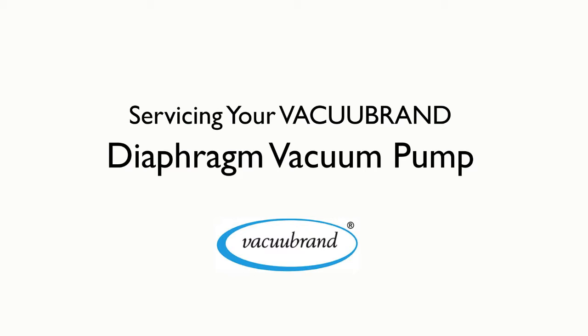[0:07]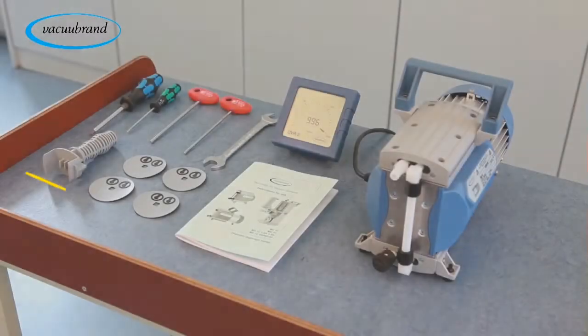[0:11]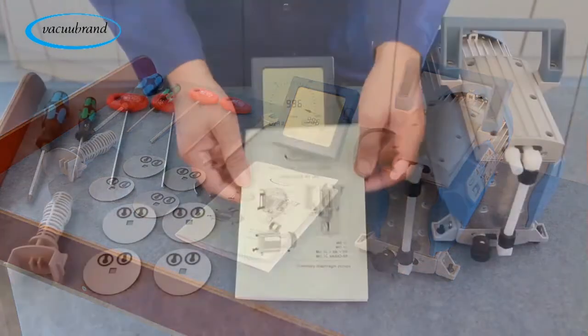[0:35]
To begin the service on your Vacuubrand diaphragm vacuum pump, you will need the following tools and accessories: a diaphragm service kit, a Phillips head screwdriver, a flat head screwdriver, a 4mm Allen wrench, a 17mm open-ended wrench, a vacuum gauge with hose barb connection, an 8mm ID vacuum tubing, and a service manual for reference. You will also need an alcohol cleaning solution and a clean towel for head cover cleaning.
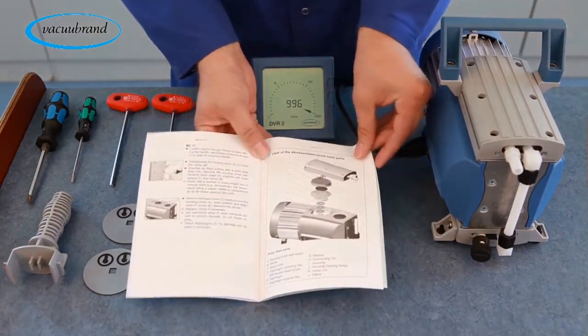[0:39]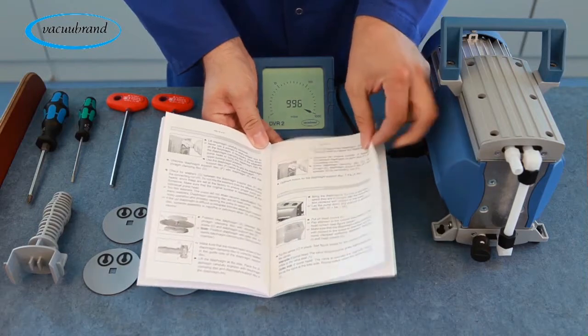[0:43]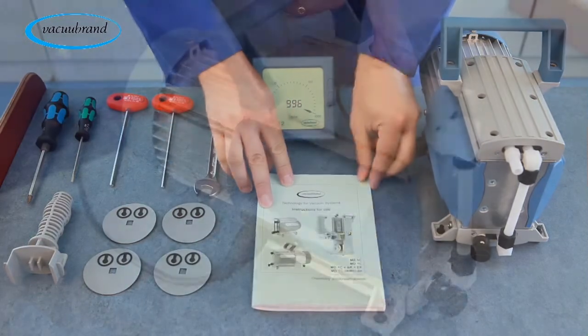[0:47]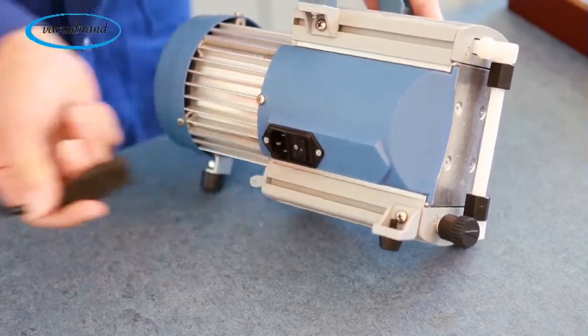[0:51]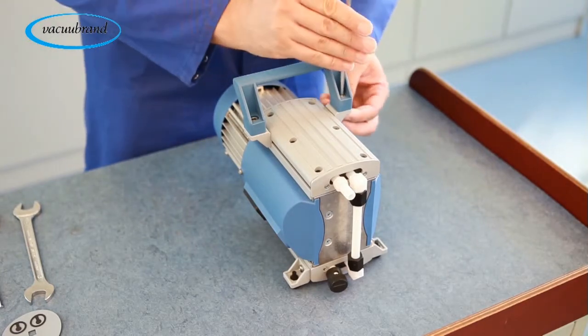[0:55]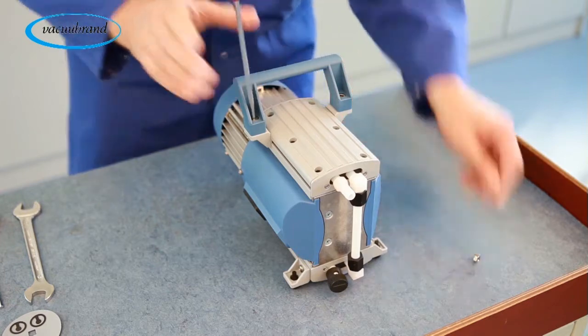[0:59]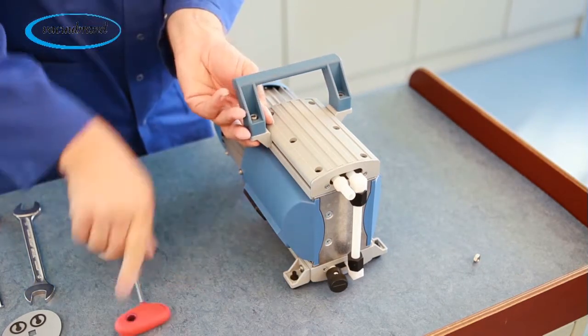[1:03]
Read the instructions in your service manual carefully to understand the details of servicing your vacuum pump. Turn off the power to your vacuum pump and disconnect the power cord. Remove the handle using the 4mm Allen wrench and set the screws and nuts aside for reassembly later.
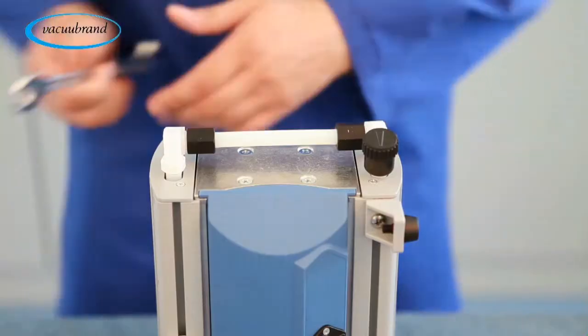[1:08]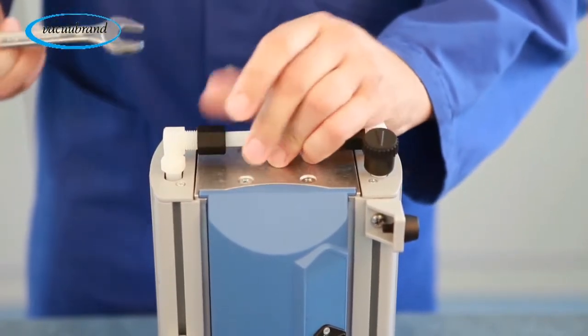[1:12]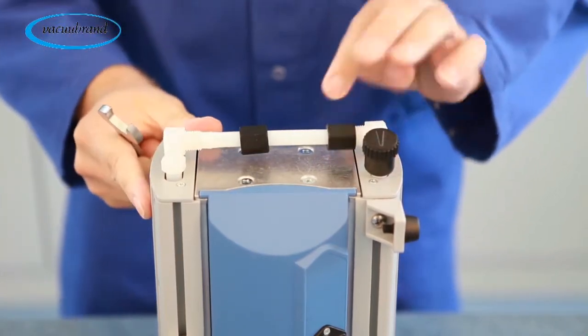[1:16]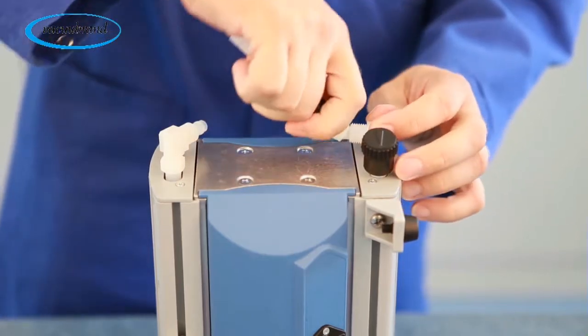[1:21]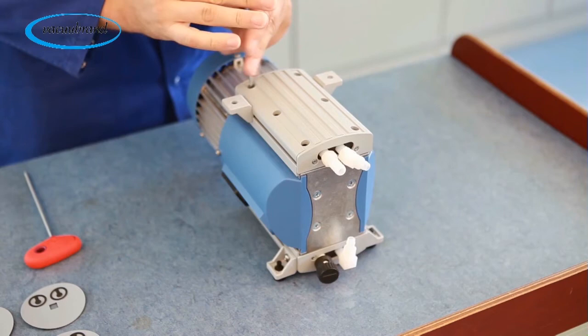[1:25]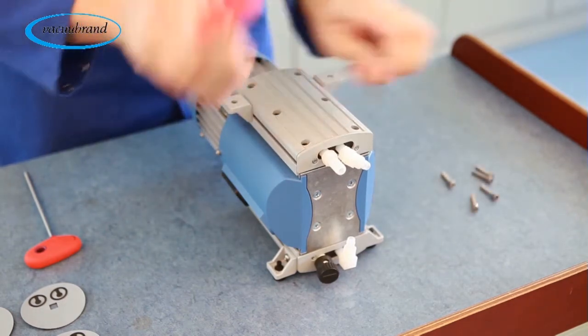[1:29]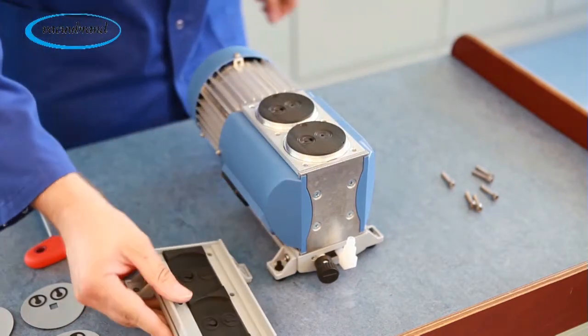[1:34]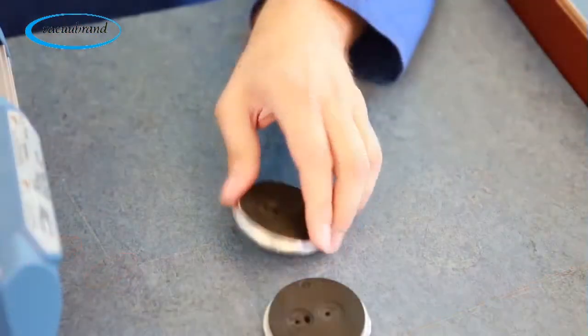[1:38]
Using the open-ended wrench, refer to your service manual for proper size. Disconnect the vacuum piping connection by loosening the vacuum fittings, carefully removing the piping from the elbow connections. Using the 4mm Allen wrench, remove the housing cover. Remove head covers and set aside.
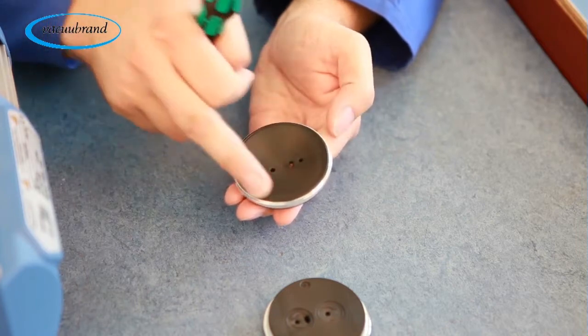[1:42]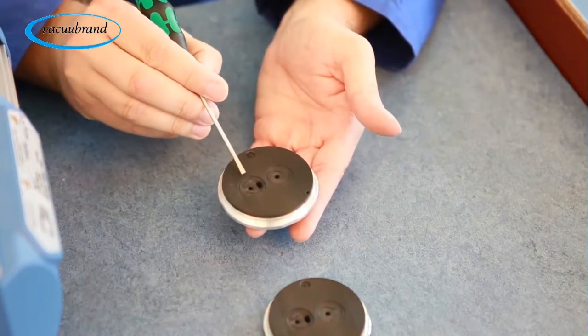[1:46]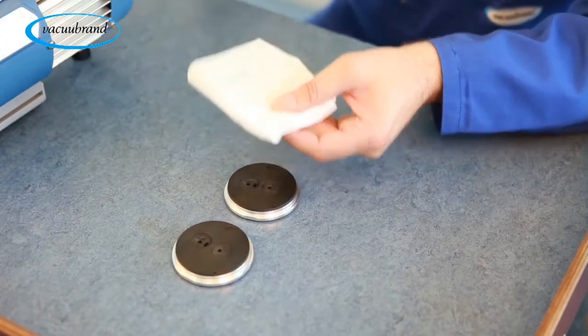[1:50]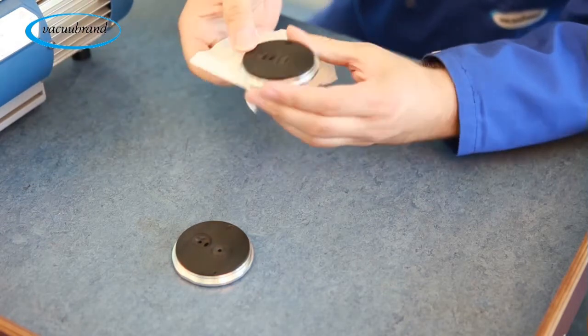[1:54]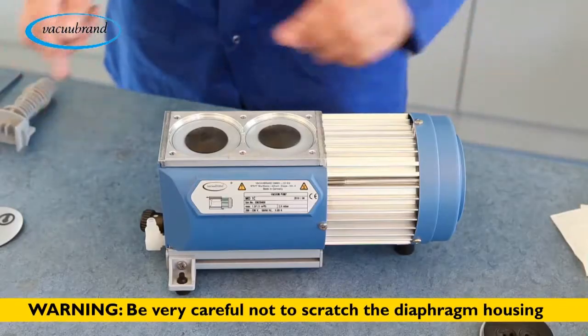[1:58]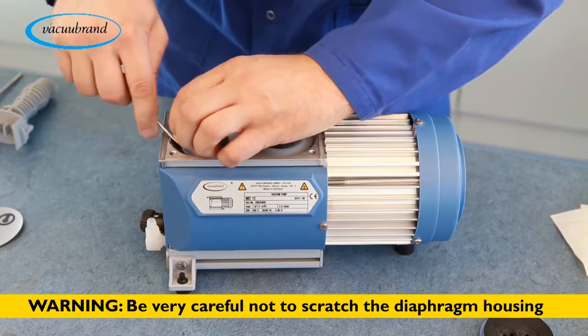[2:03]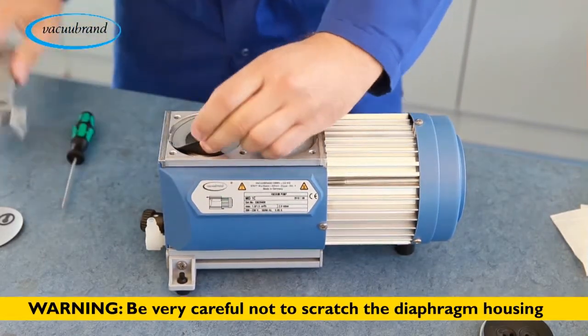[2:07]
Check for any noticeable wear and tear on the head covers and replace as needed. Clean intact head covers with ethyl or isopropyl alcohol. Carefully press the diaphragms to be changed using a blunt tool such as a flat head screwdriver to create a space to lift the diaphragm so that the diaphragm wrench can slip in. Be careful not to scratch the diaphragm housing.
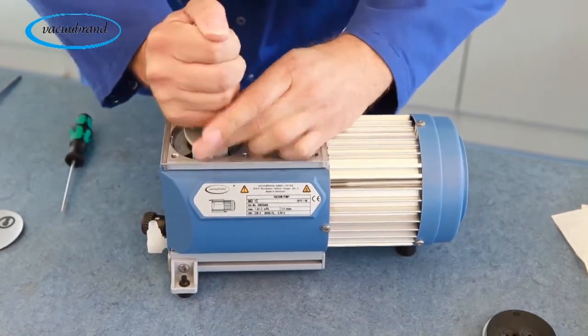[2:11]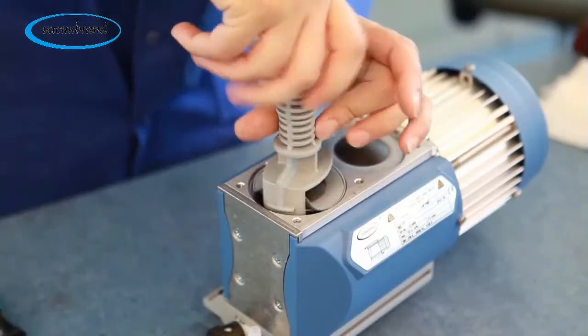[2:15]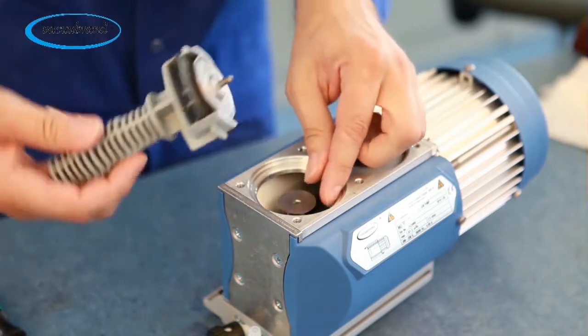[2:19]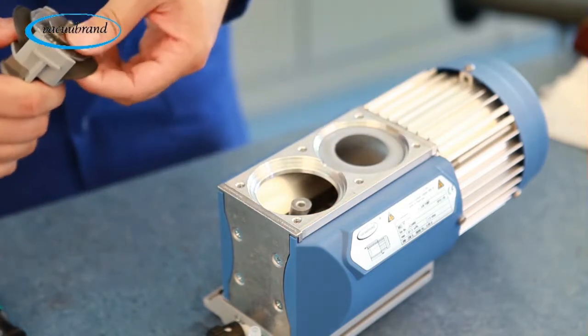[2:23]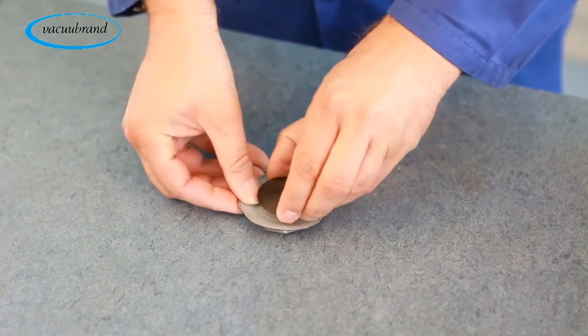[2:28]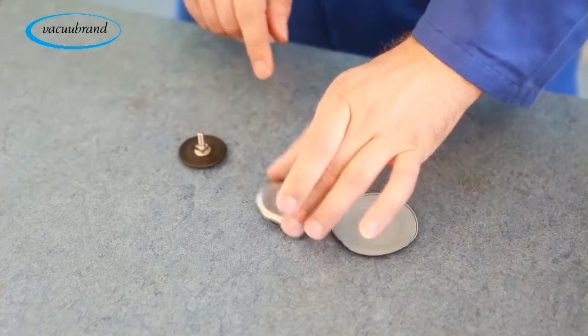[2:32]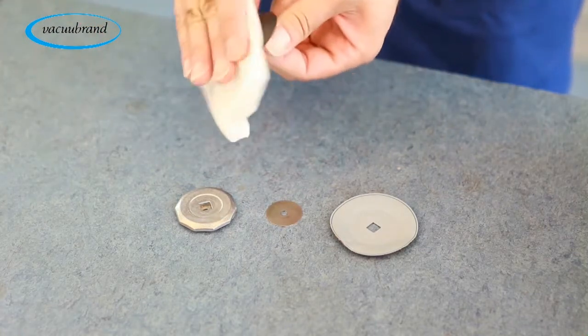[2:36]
Slip the diaphragm wrench behind the diaphragm and engage with the flat-sided support disc. Loosen the diaphragm support disc from the connecting rod of the pump itself by turning counterclockwise. Remove the support disc assembly washer from the connecting rod. Remove the diaphragm clamping disc from the diaphragm assembly and clean with the alcohol solution.
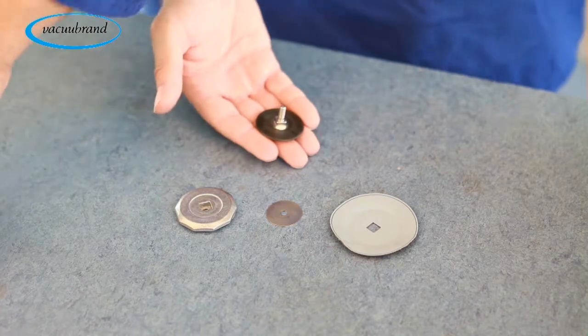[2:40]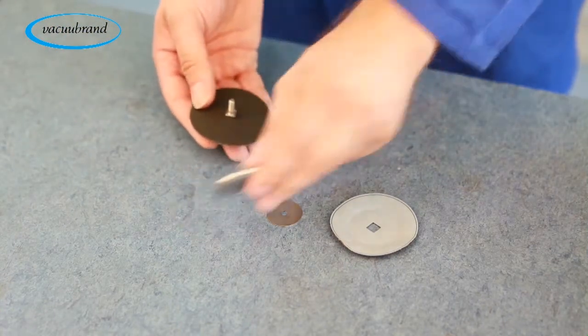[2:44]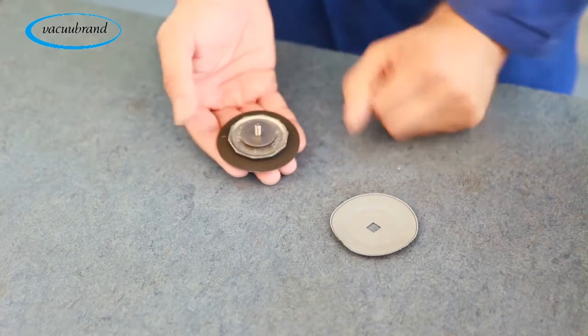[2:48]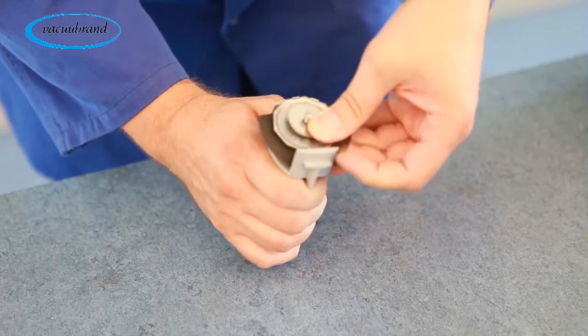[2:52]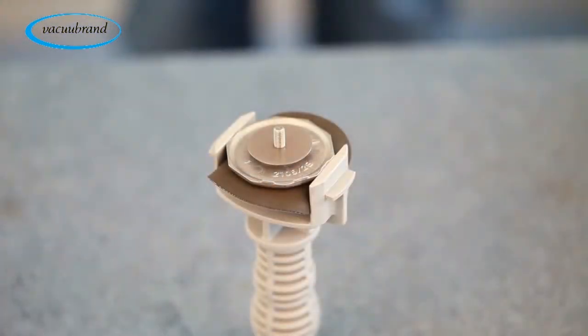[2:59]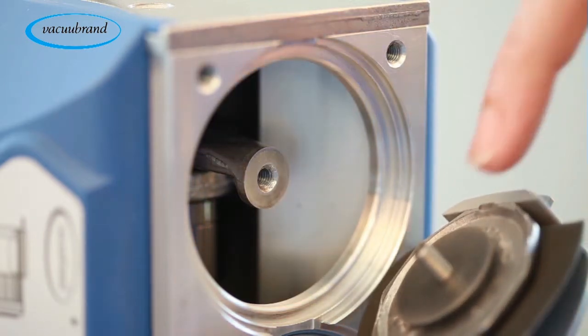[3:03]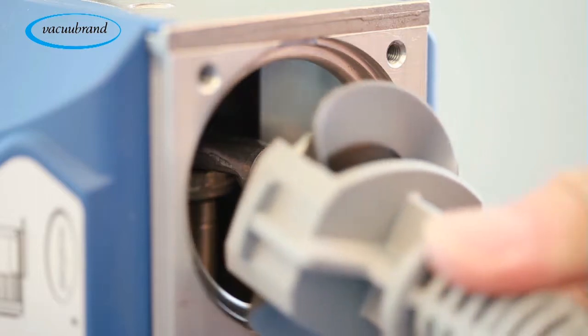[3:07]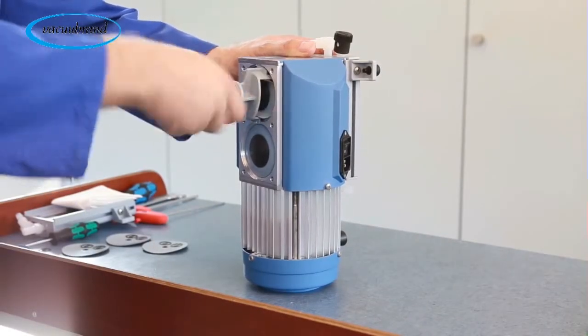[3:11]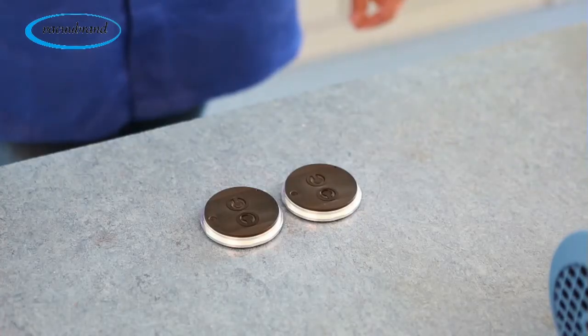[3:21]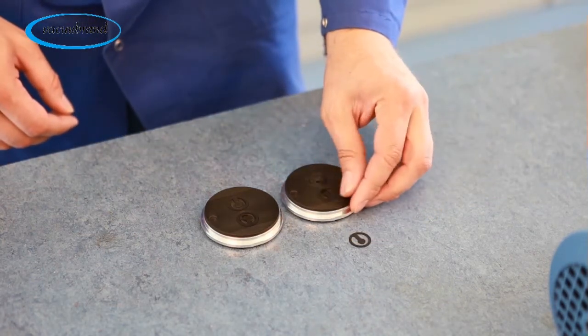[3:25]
Replace the worn diaphragm with a new diaphragm in the same orientation and reassemble to the diaphragm assembly. Place the assembly back into the diaphragm wrench. With the pump on end, guide the diaphragm assembly back into position on the connecting rod, replacing the support disc assembly washer in the process, and screw the entire assembly back into place. Remove the old flapper valves from the head covers.
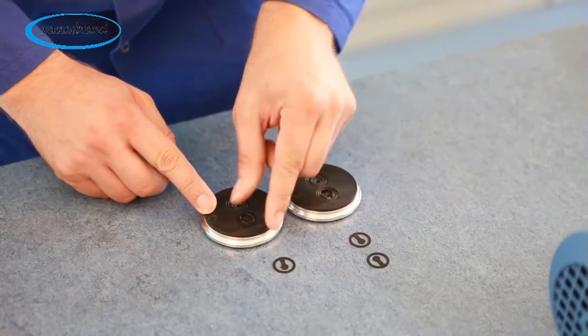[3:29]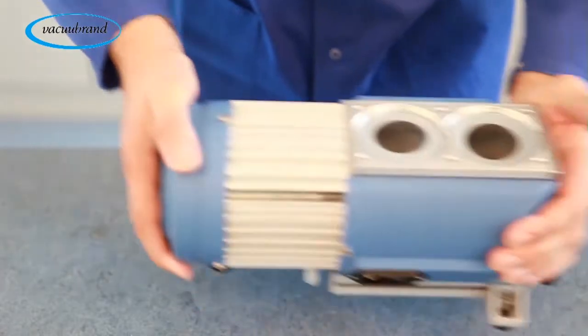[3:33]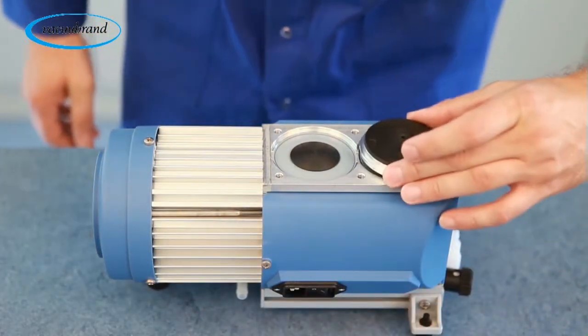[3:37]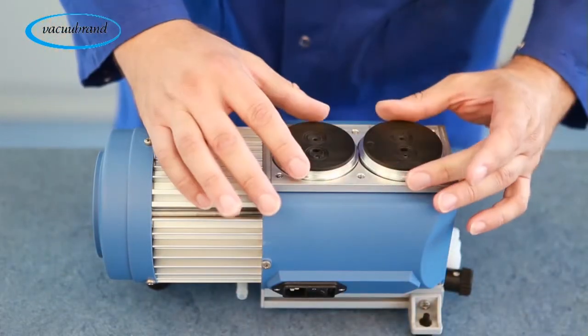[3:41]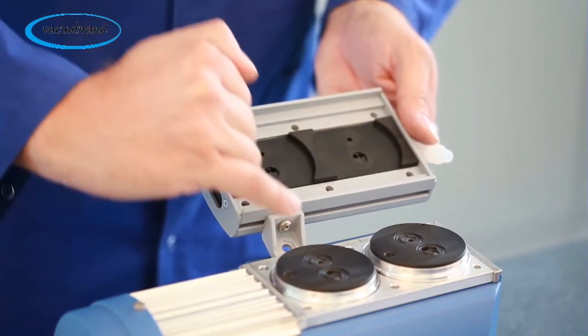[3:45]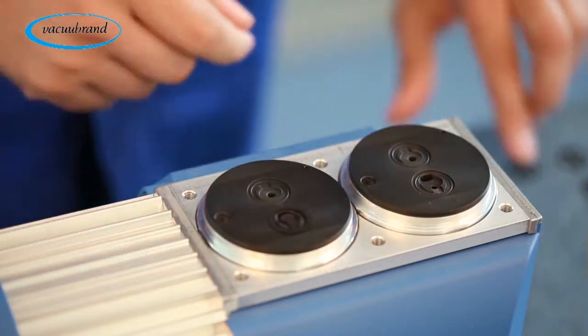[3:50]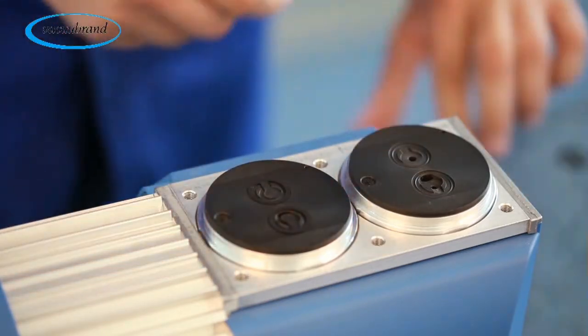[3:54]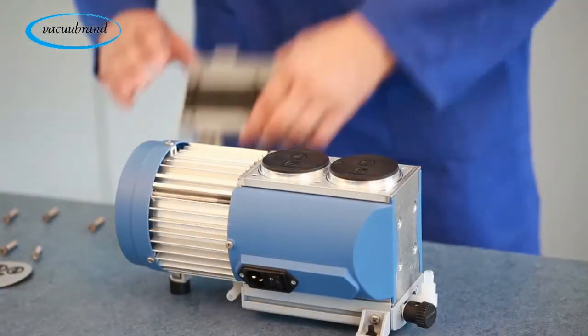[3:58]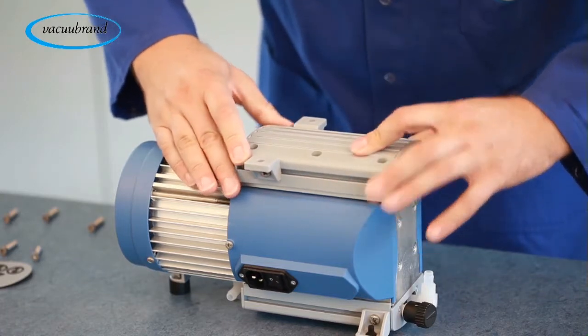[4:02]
Place the head covers back into position on the diaphragms. Be sure to line up the inlet and exhaust ports of the housing cover with the head covers. Replace the flapper valves with the new valves from the replacement kit. Again, make sure the flapper valves are properly seated into position in the head covers. Place the housing cover back into position and secure with the screws.
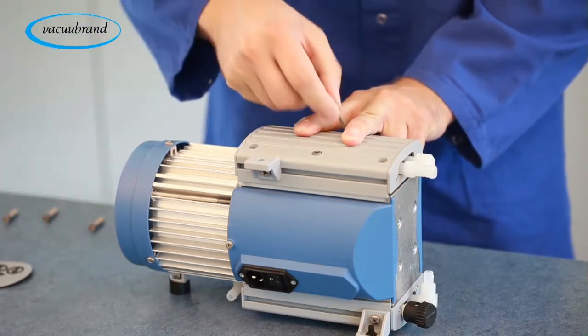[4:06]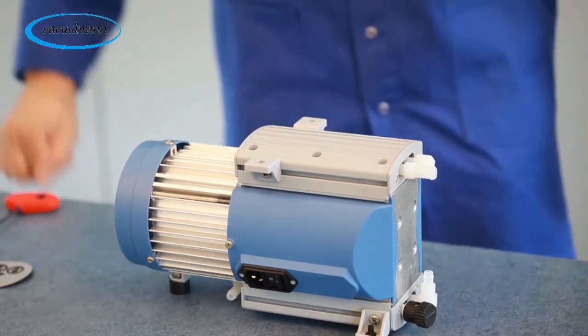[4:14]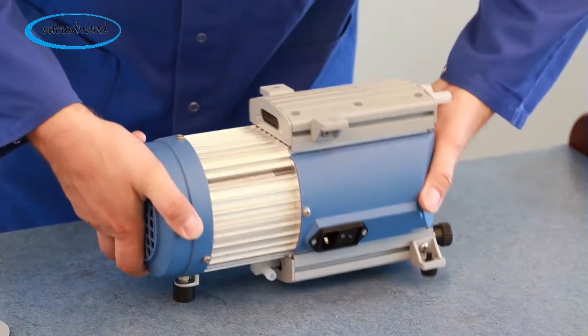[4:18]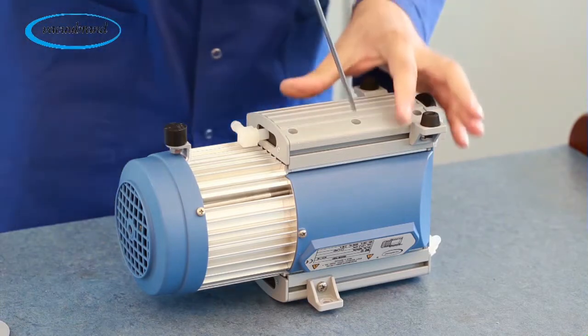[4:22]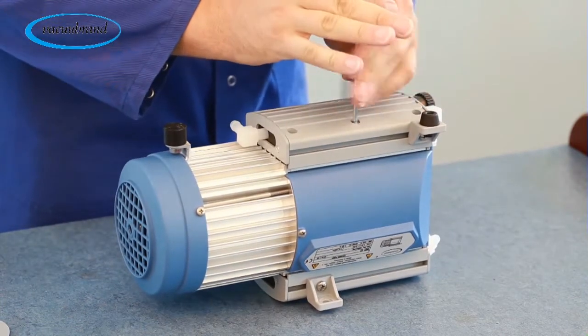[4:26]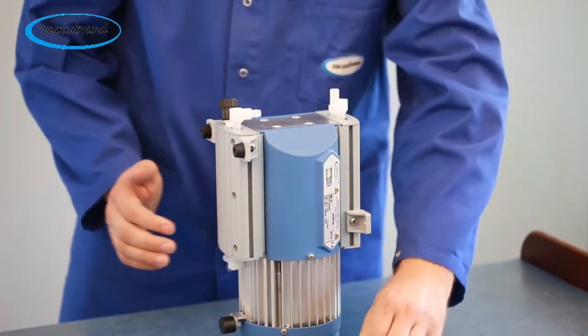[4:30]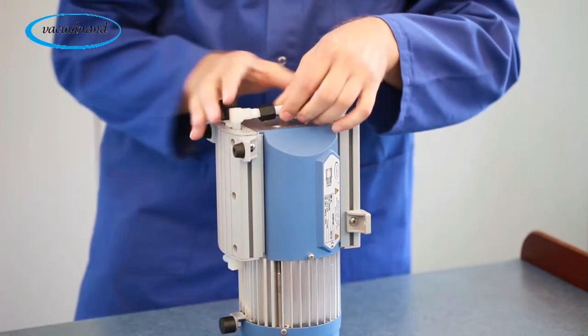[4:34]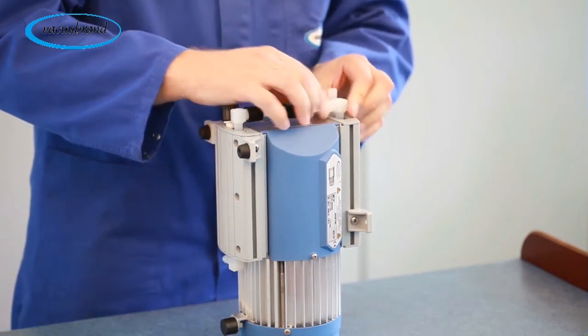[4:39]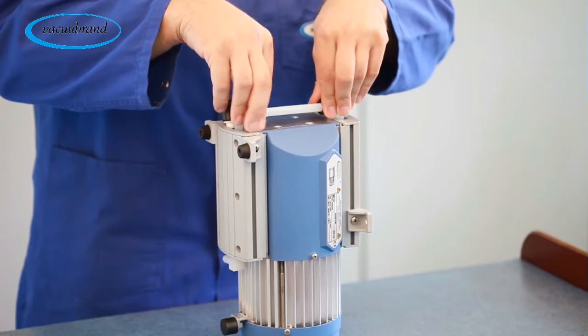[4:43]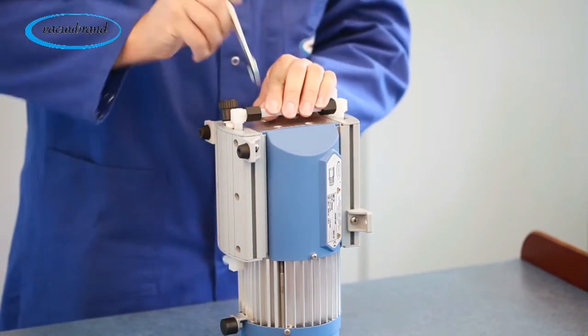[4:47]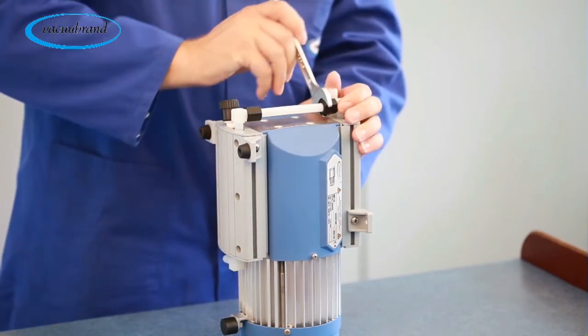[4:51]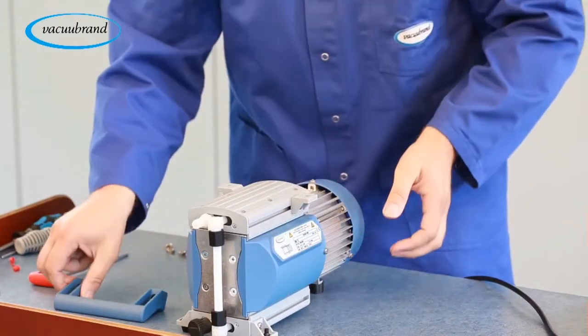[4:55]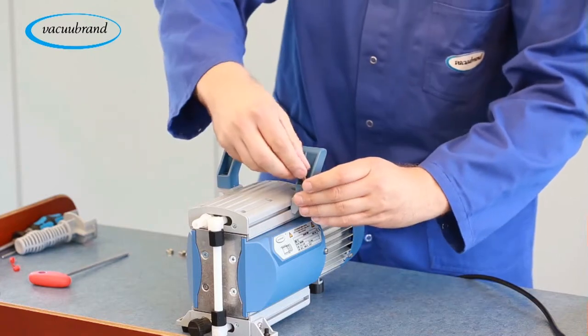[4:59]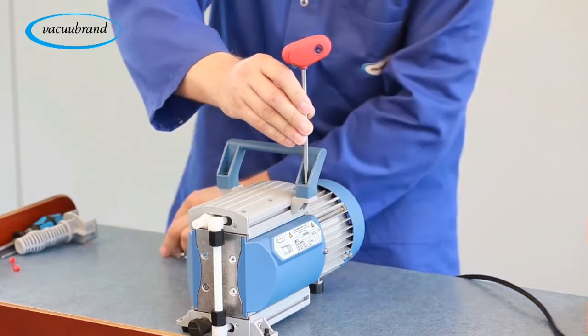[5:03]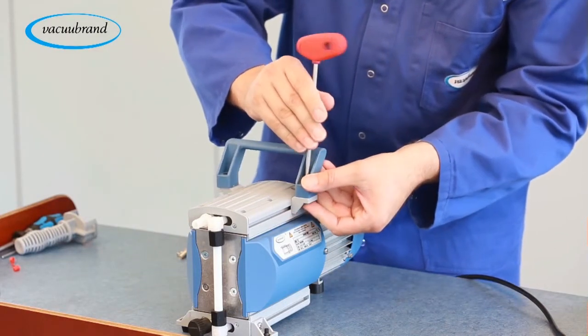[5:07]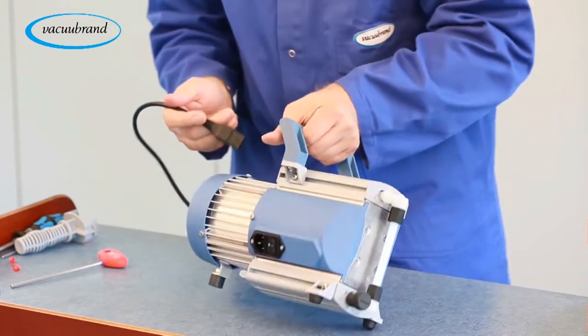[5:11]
Repeat this diaphragm service process for the adjacent diaphragm assembly on the other side of the pump. Reconnect the vacuum piping to the elbow connections and tighten the vacuum fittings. Reassemble the pump handle. Plug the unit back in.
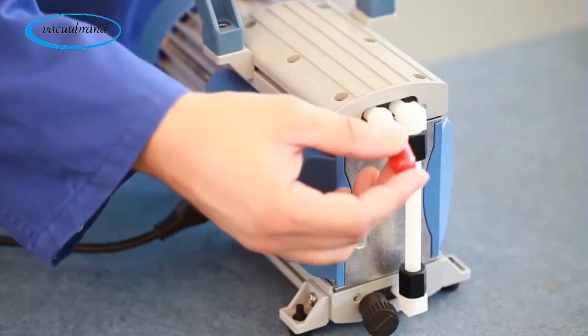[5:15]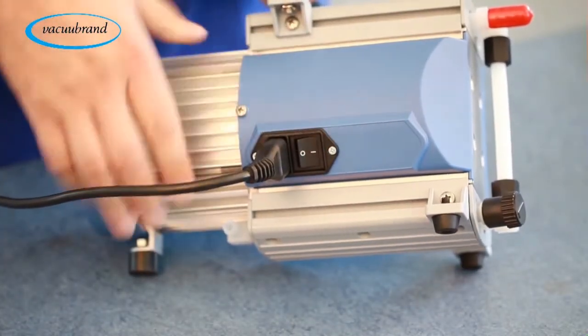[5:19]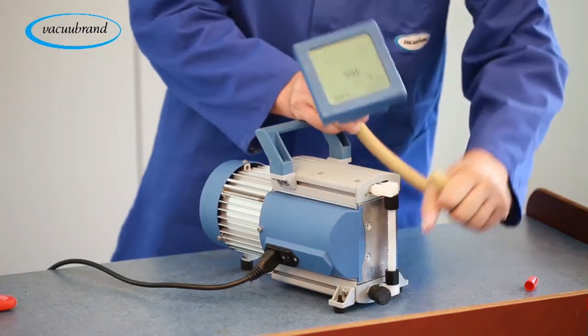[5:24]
Cap the pump inlet and turn the pump on to make sure the pump starts properly. Be careful not to cap or block the exhaust outlet. Connect the vacuum gauge to ensure proper vacuum levels are met by the newly serviced pump.